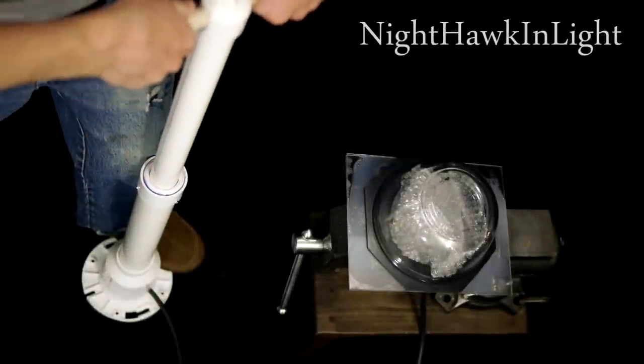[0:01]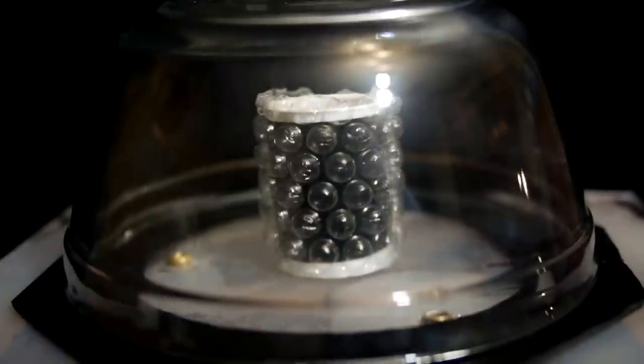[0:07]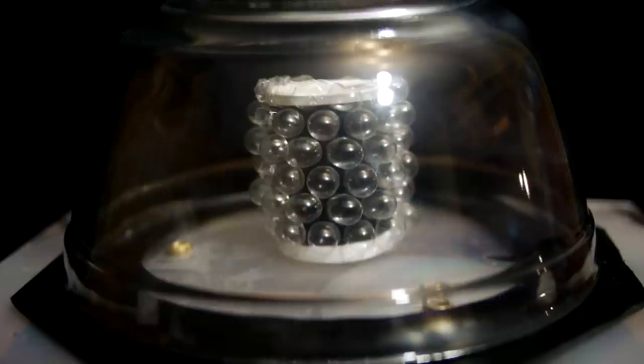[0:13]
This video will show how to build a high-volume manual vacuum pump. This sort of pump can be used to pull the air out of a sealed environment, which is useful for many scientific experiments and practical purposes.
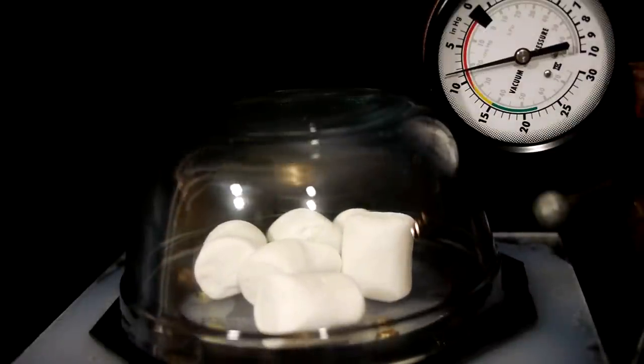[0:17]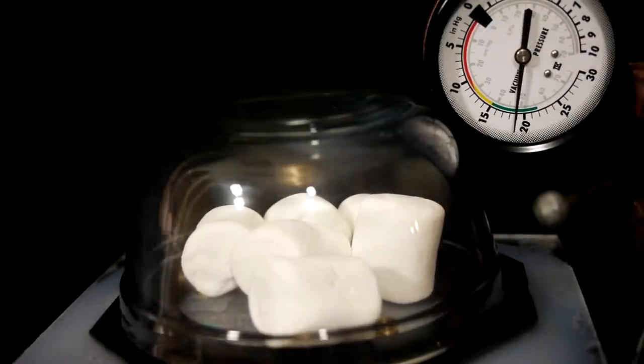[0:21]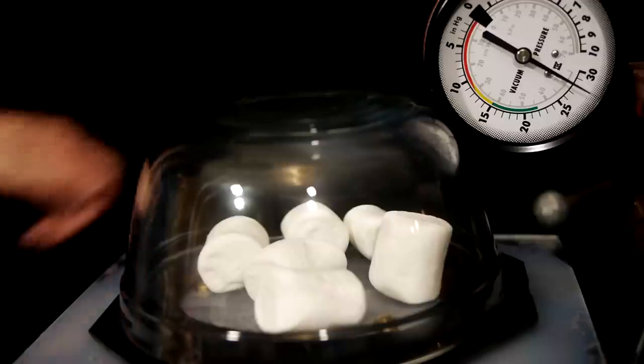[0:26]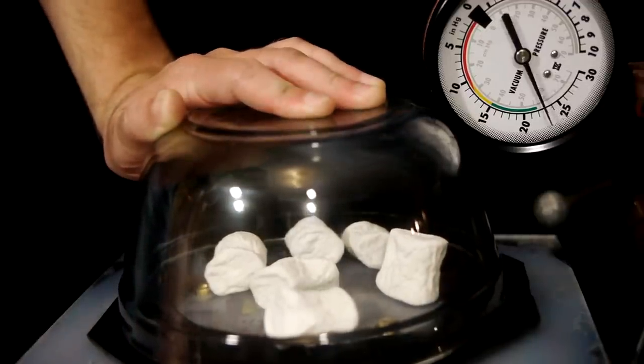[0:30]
Pulling the air out of marshmallows is a common demonstration of vacuum pressure. They first expand as air escapes from inside of them, then when once again exposed to normal pressure, the marshmallows will collapse in on themselves because the air bubbles within have been emptied.
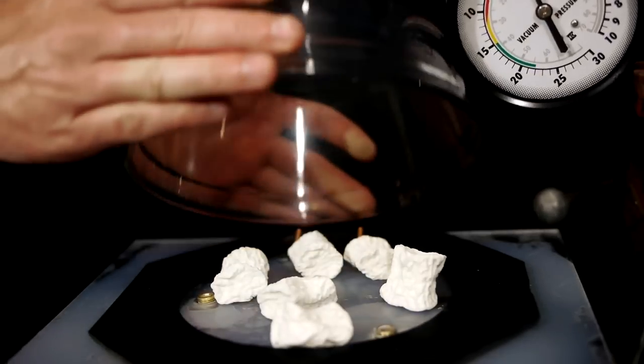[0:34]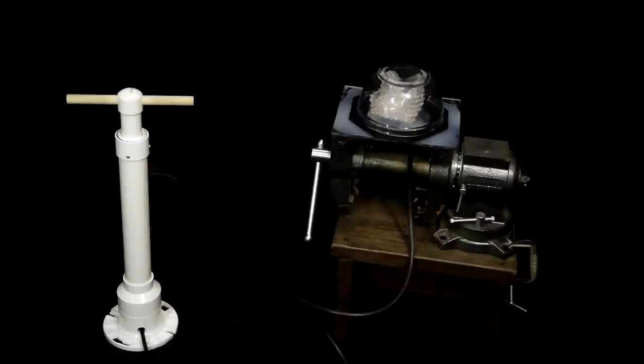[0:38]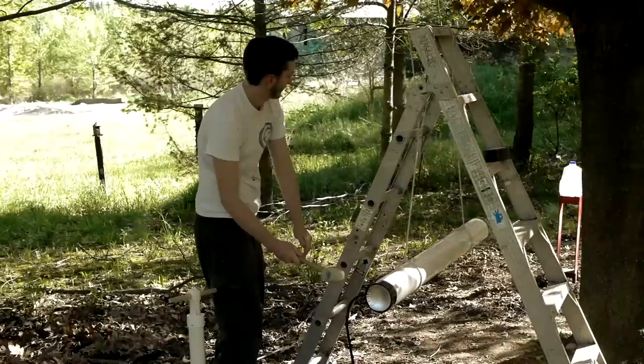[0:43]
This pump is the same design that I used in my previous video to draw the air out of a PVC pipe to create this vacuum cannon.
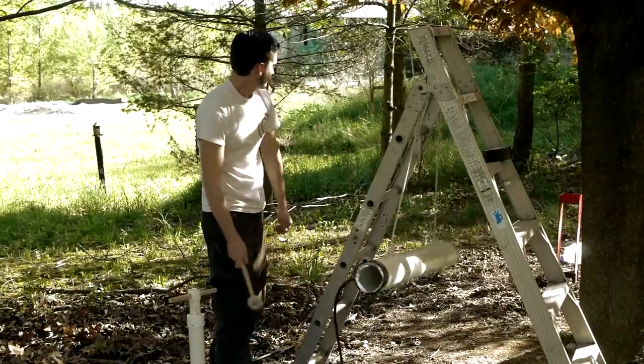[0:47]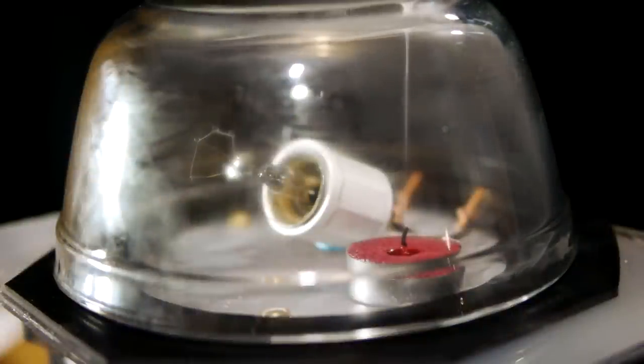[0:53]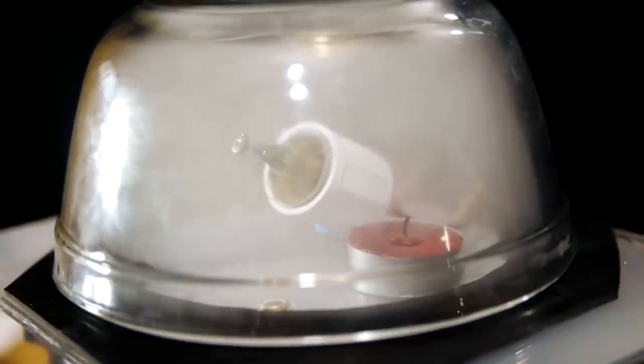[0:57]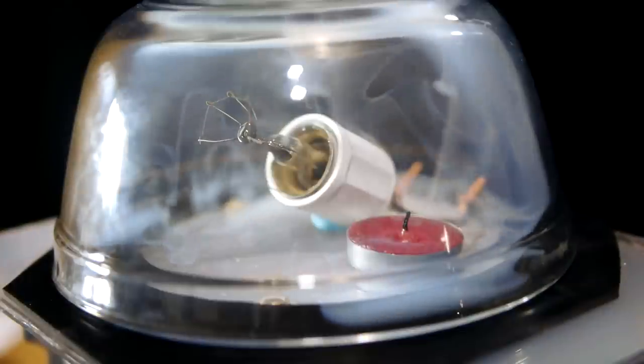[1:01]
The wax vapor from an extinguished candle will cause water in the air to condense into a thick fog as vacuum is pulled with the pump. A light bulb without the glass will even stay lit for several seconds in a vacuum before burning out.
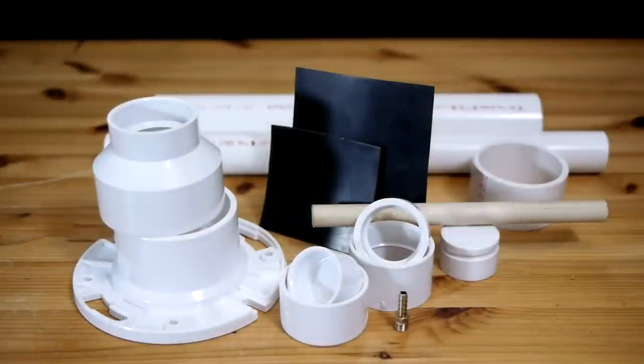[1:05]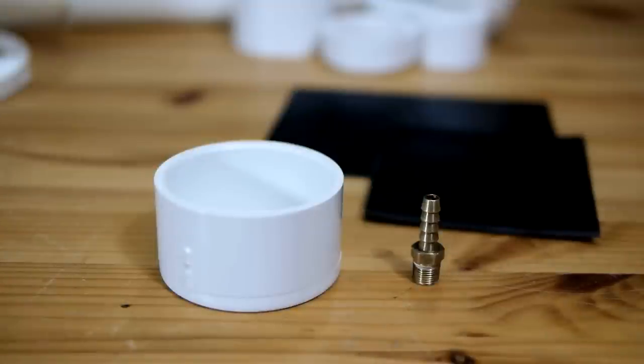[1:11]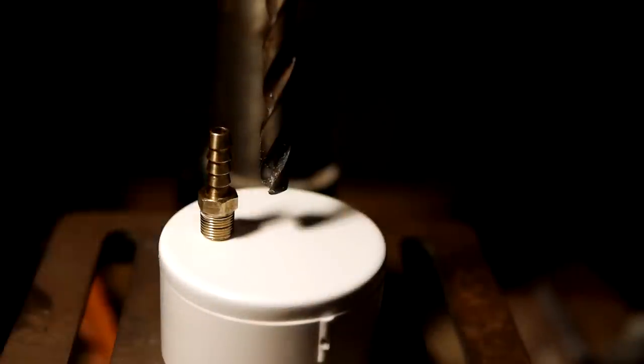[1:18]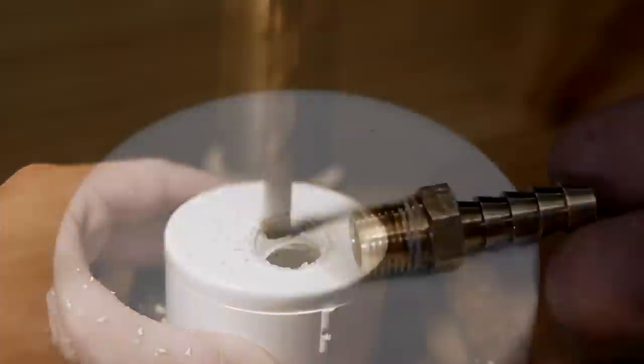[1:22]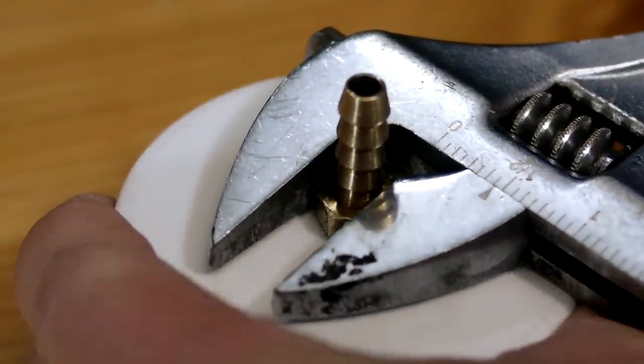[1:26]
This vacuum pump is composed of PVC pipe and fittings and two simple one-way valves that will be made using sheet rubber. Both valves will be mounted to a 2-inch PVC end cap, which will be modified first by drilling a hole to accept the threads on a 1/4-inch hose adapter. The hole drilled should be just small enough that the brass threads bite into the PVC for an airtight seal.
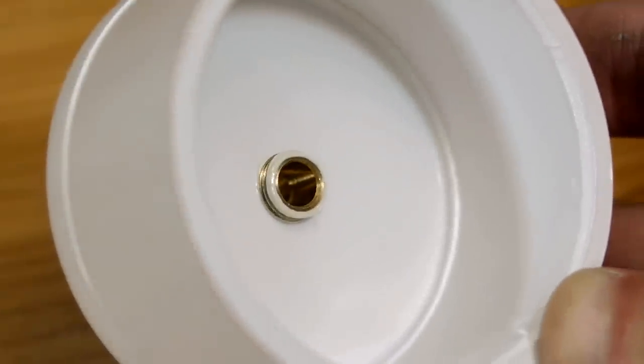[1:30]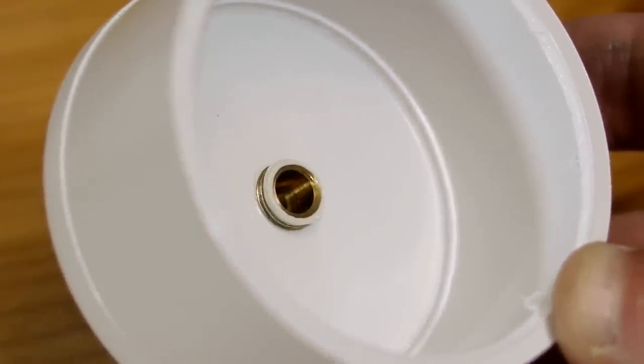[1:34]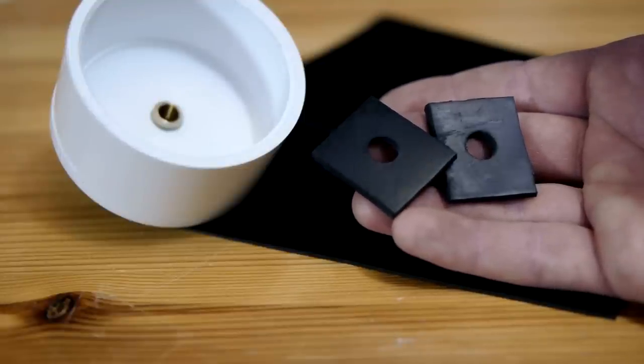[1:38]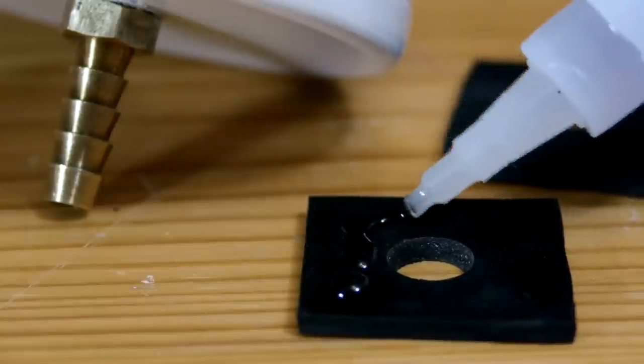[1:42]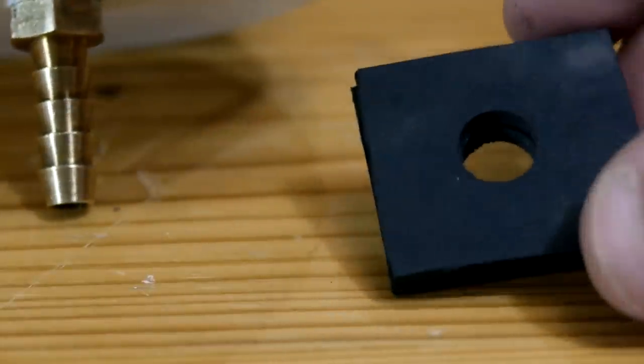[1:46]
The first of the two one-way valves will be mounted over this brass fitting on the inside of the end cap. Two pieces of 1/10 inch thick sheet rubber are given a hole in the center to fit over any of the threads on the fitting that might be coming through the cap. They are then superglued together to make up the base of the valve.
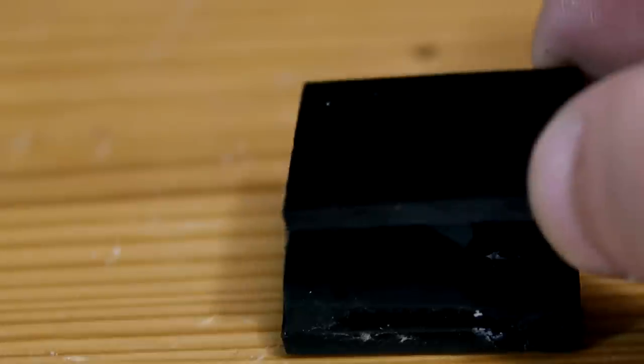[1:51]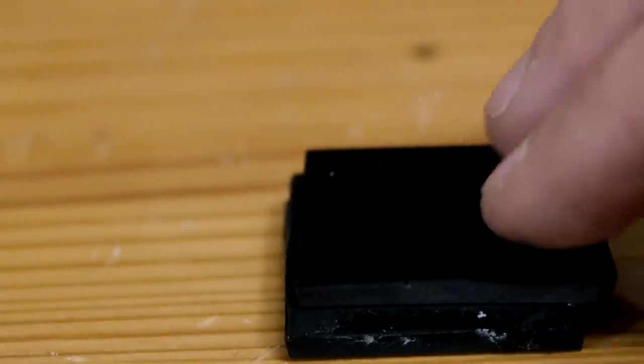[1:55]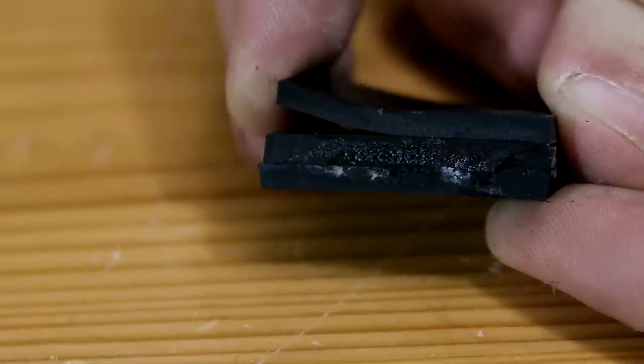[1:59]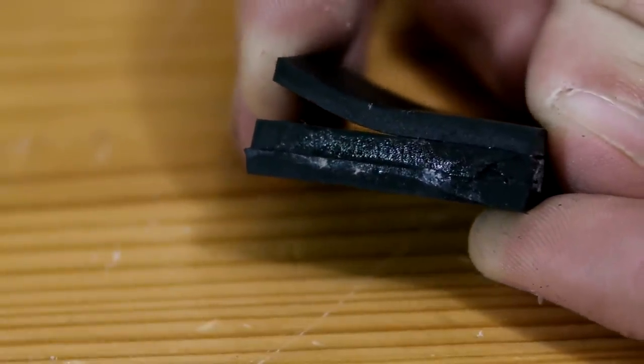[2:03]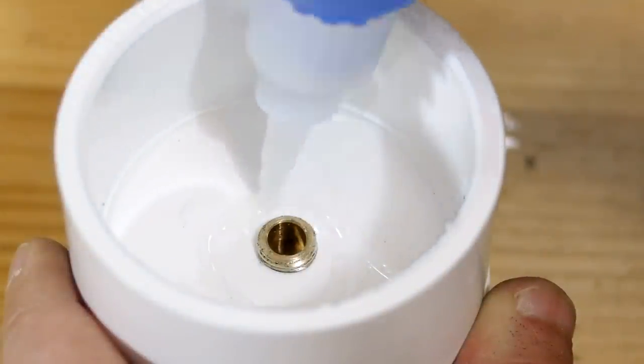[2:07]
A solid piece of sheet rubber of the same size is superglued over the top of the base, but only held on by glue on one side of the hole. This will allow the top sheet to flex open and let air pass by if it comes through the brass fitting, but prevent air from returning if the flow changes direction. With a ring of superglue around the hose fitting, the one-way valve can be glued permanently into place.
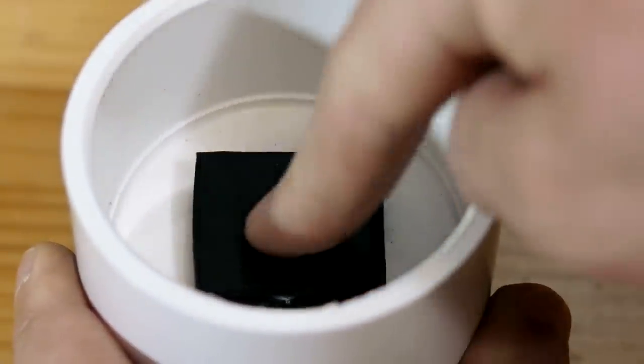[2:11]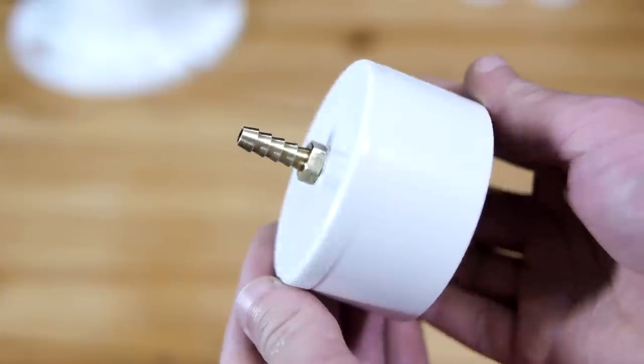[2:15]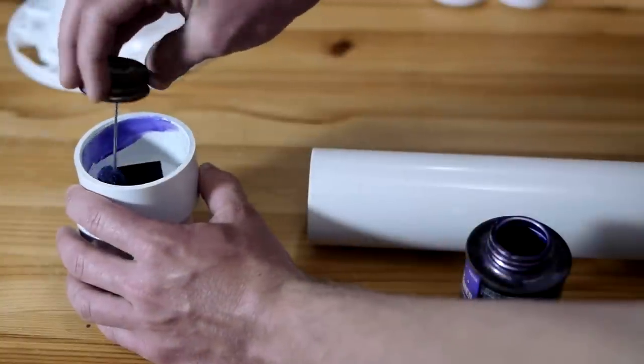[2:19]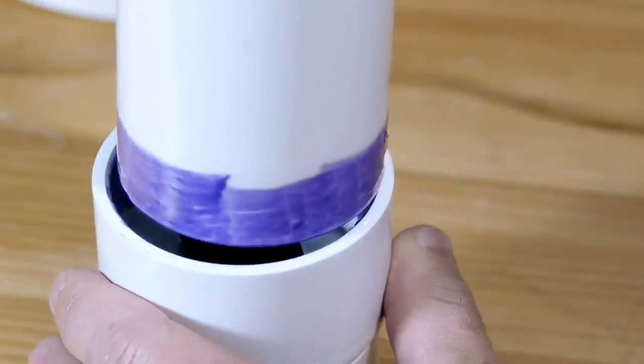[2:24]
Before making the second valve, the end cap will need to be affixed to the main body of the pump, which is a 16-inch length of 2-inch diameter PVC pipe. Some PVC primer and cement is used to join the cap to one end of the pipe.
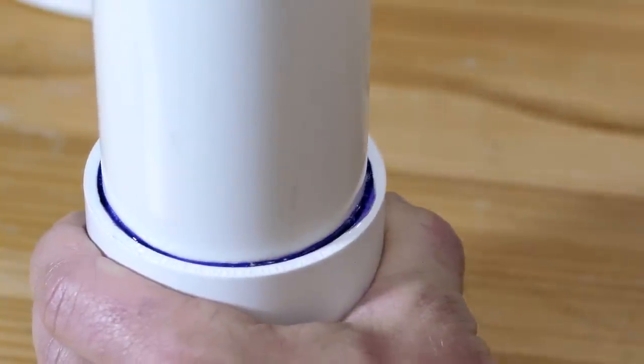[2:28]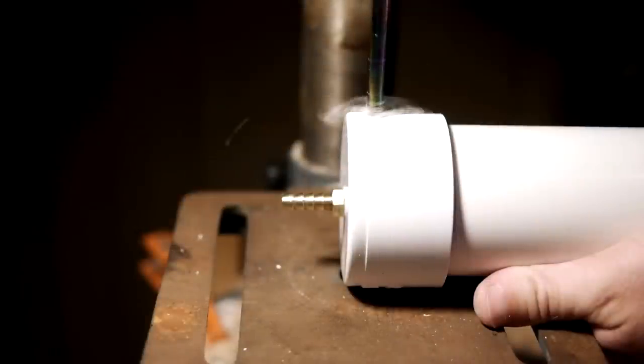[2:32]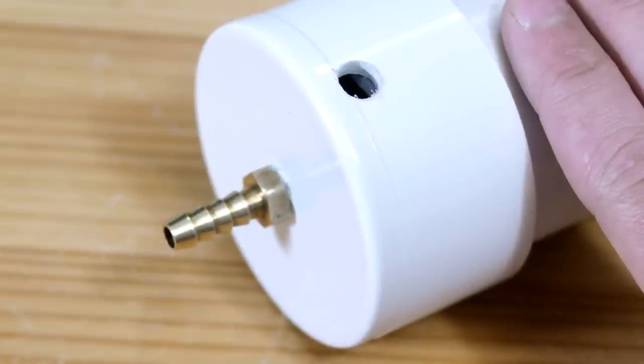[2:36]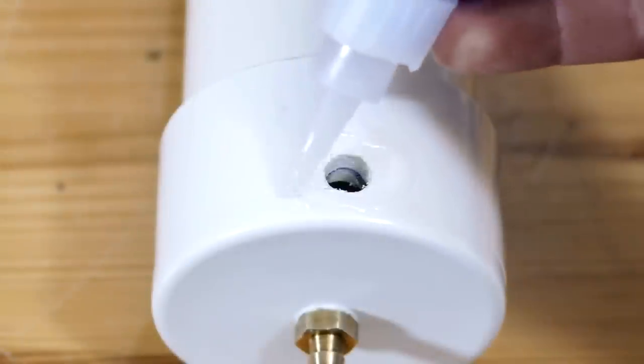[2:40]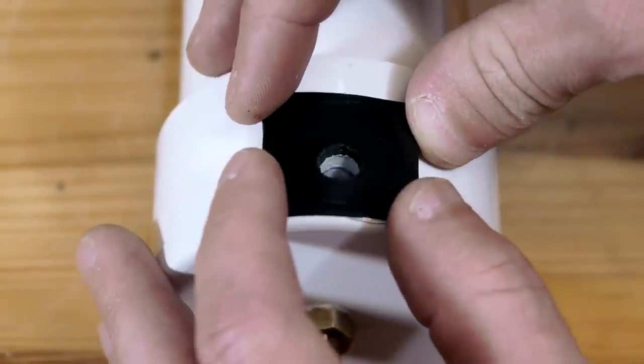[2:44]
Now about a 1/4 inch away from the bottom of the cap, a hole is drilled on the side as an air release for the second valve. 5/16 inch is an adequate diameter for this hole. Using more superglue, another piece of rubber with a matching hole is lined up and glued over the air release.
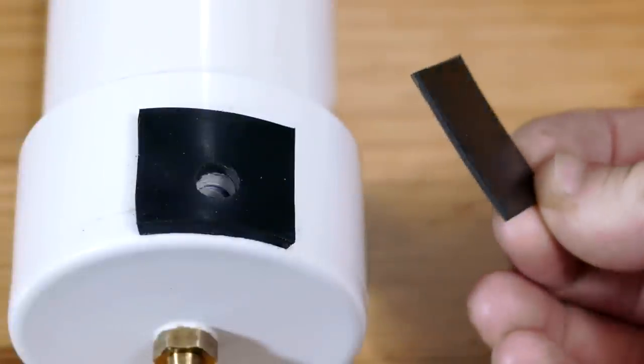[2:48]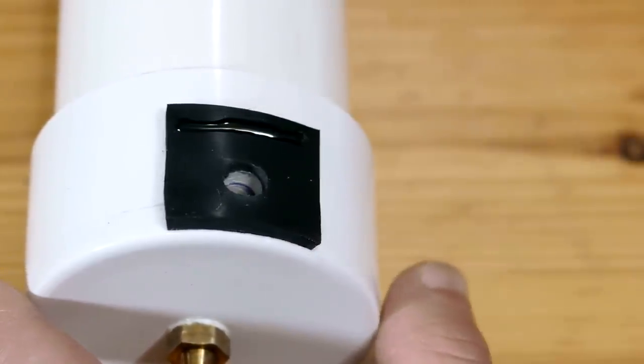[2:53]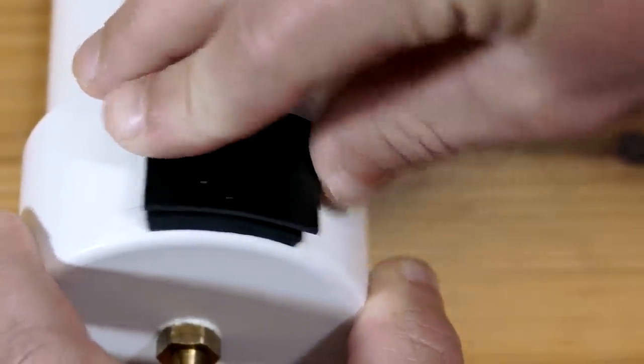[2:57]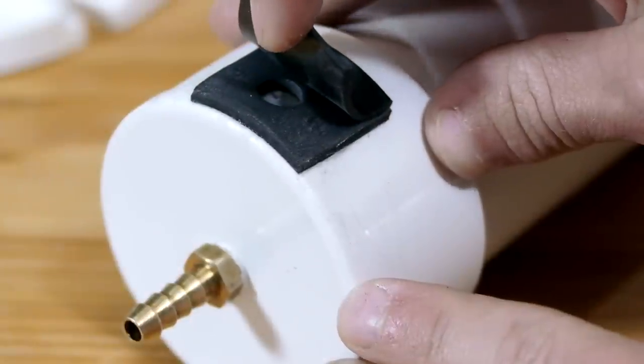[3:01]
To turn this into another one-way valve, another solid sheet of rubber is glued over top, held on by only one side of the hole to allow flex. I found that for the top sheet on this valve, thinner 1/16 inch sheet rubber works best, but the same rubber as before will do if thinner sheet is not available.
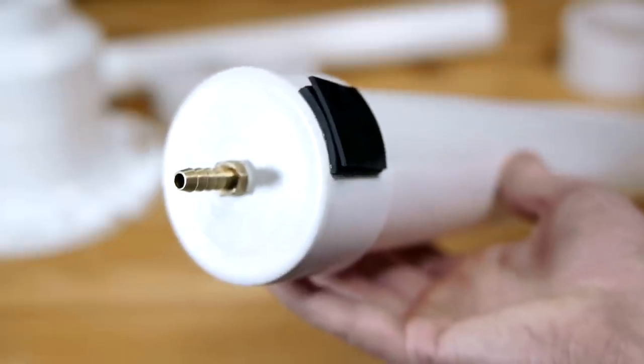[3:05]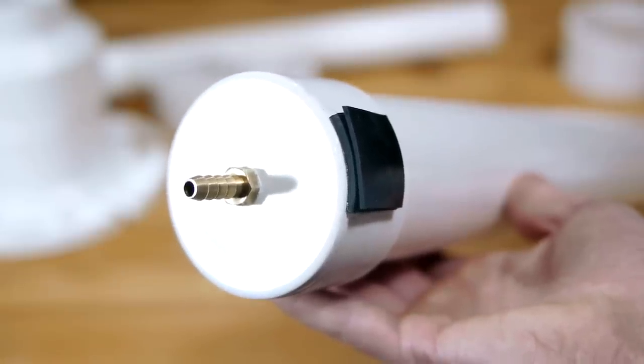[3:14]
With both valves now in place, if a piston seals this pipe and is pushed forward, air will escape through the side, and when pulled back, the side valve will seal and the inside valve will allow air to be pulled through the fitting. Repeating this process will draw a vacuum in whatever chamber the fitting is attached to.
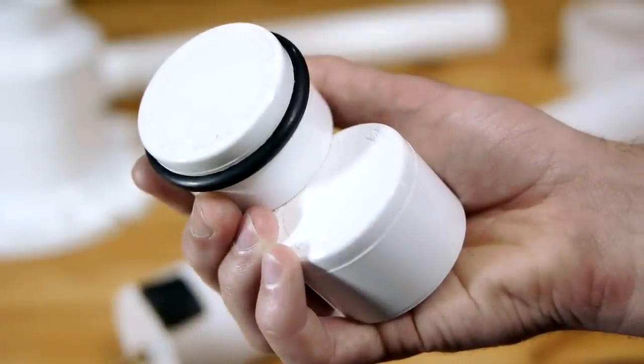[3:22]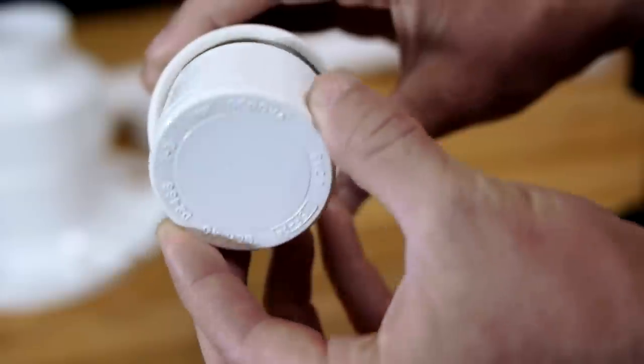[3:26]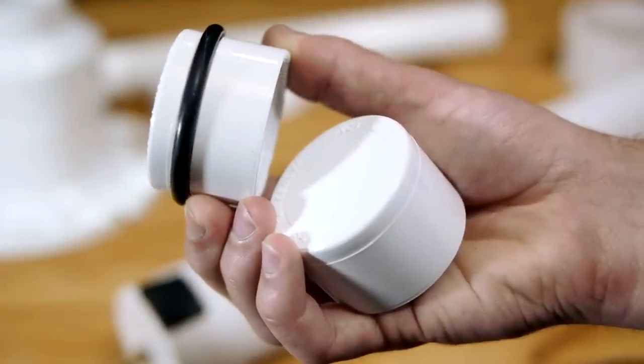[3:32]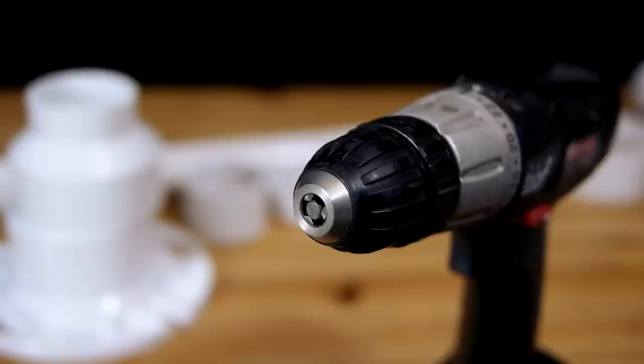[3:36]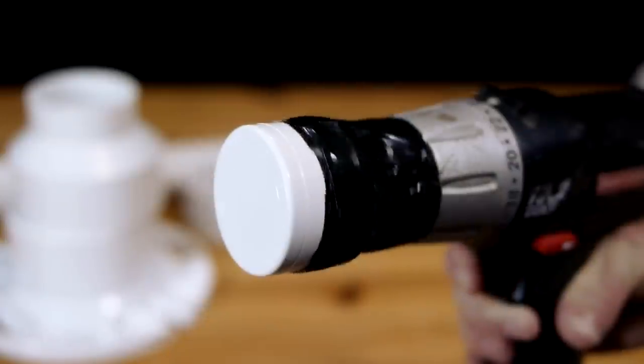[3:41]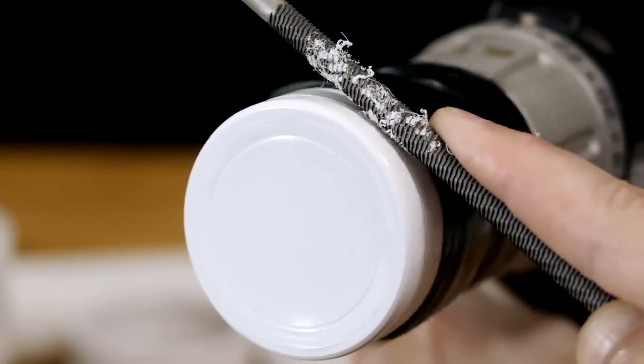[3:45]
To make the piston, I start with a 1¼-inch PVC end cap, which is already a close fit inside of the 2-inch PVC pipe, but to make it an airtight seal, the cap will need an O-ring installed. There are a number of ways to cut a groove for an O-ring, but the method I've found that requires the fewest tools is to mount the cap to a drill and use a rat tail file to grind a ring as the drill spins.
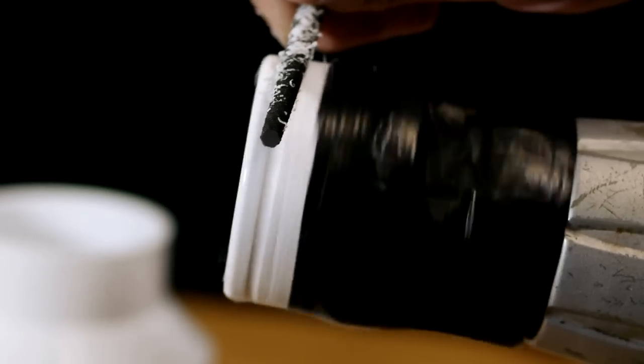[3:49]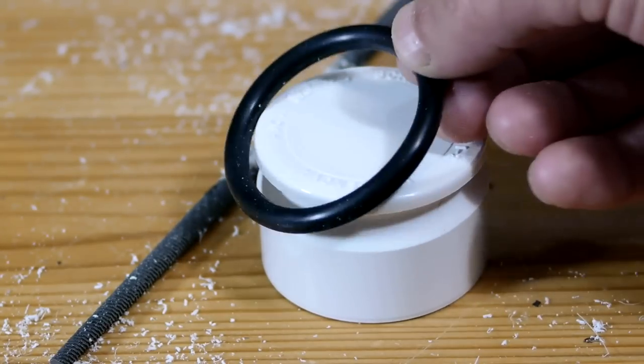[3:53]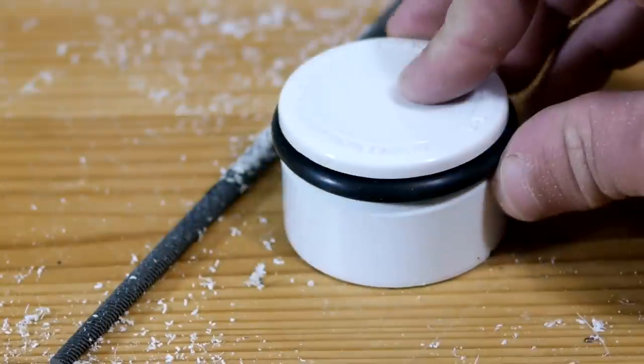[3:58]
The O-ring I am using is quite thick, so it takes a good deal of time to grind a groove deep enough for it to sit in. A narrower ring could possibly be used and would require less time, but thin rings are less durable and may need to be replaced more frequently.
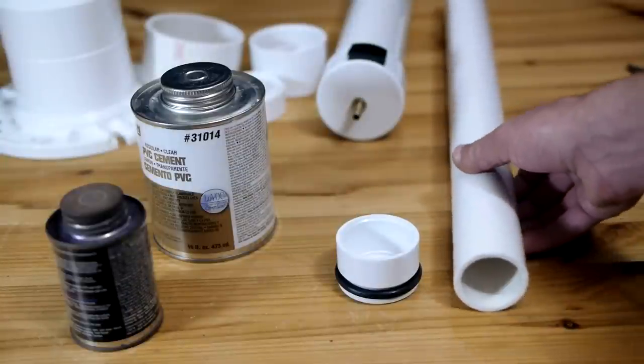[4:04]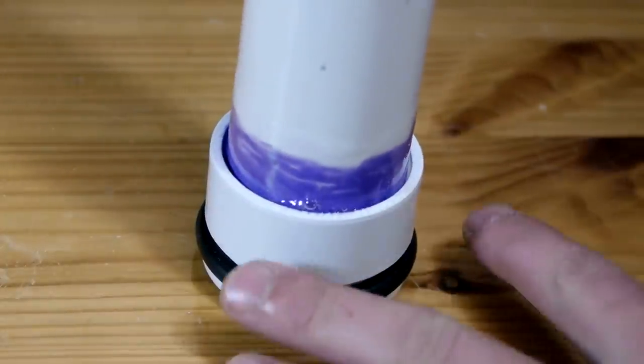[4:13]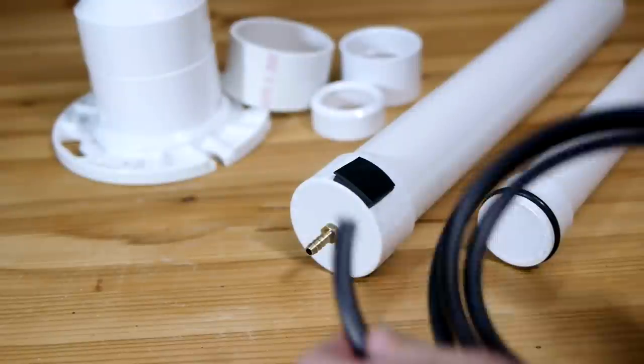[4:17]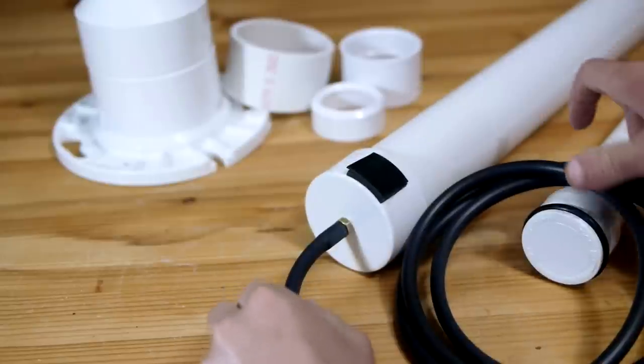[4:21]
Once the O-ring has been snapped into the groove, the piston is complete, and it can be mounted to the pump shaft, which is a 20-inch length of 1¼-inch PVC pipe. More primer and cement will get the job done nicely. Before moving on to the next step, a length of 1/4-inch vacuum hose should be pressed onto the brass fitting at the base of the pump.
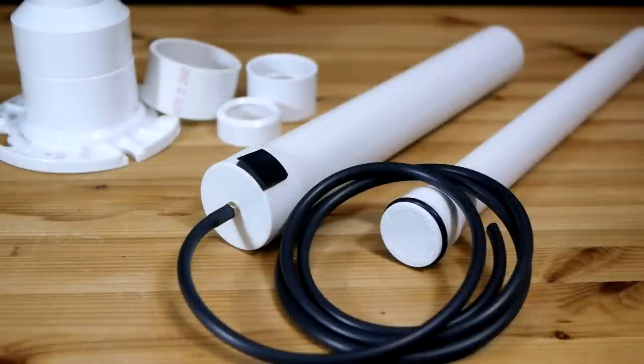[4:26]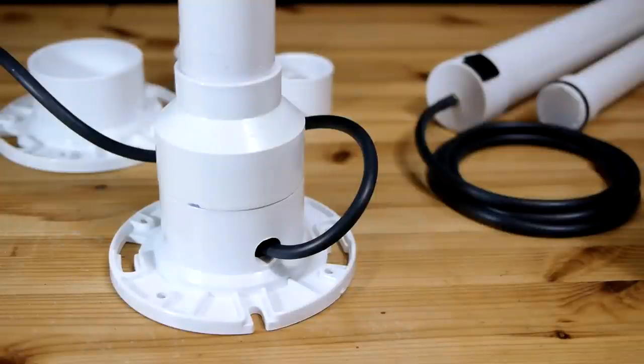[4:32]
All the moving parts that allow this pump to function have now been completed. The rest of the design is simply there to make it convenient to operate, starting with the base. The first piece used is a 2-inch to 3-inch adapter which will need to be slid all the way down over the 2-inch body of the pump.
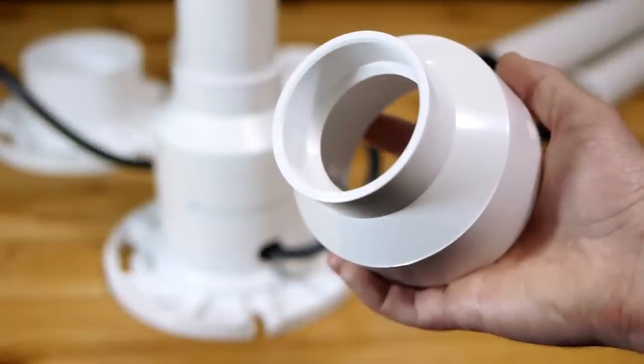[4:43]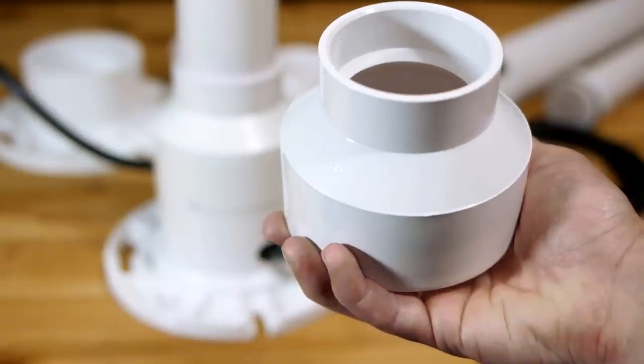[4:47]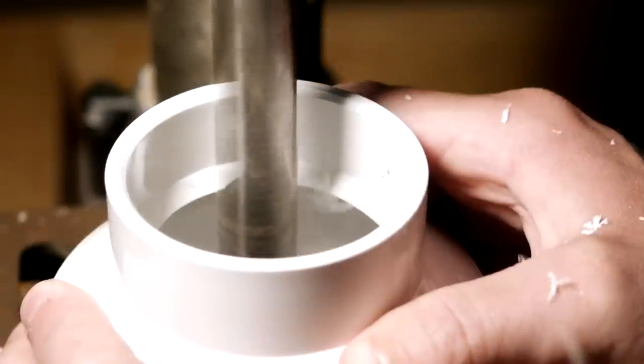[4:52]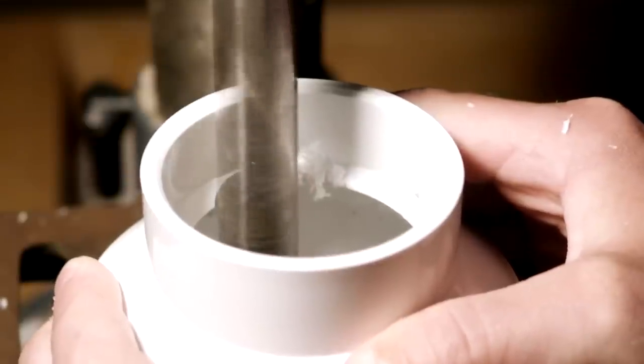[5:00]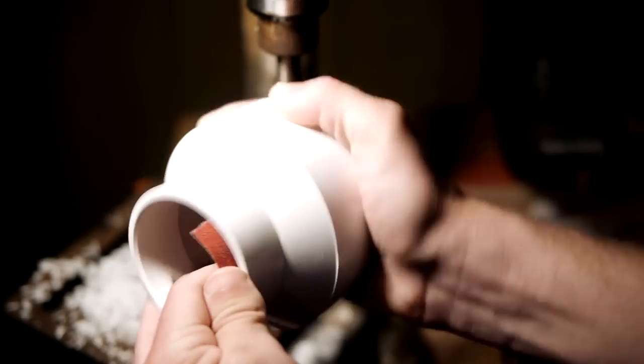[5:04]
The adapter has a ridge built into the inside wall to prevent it from being slid freely all the way over a pipe, so that ridge will need to be ground out. A large drill bit works nicely to quickly remove the problem, as can be seen here, but a razor blade or a Dremel will work as well. Some sandpaper smooths out any rough edges, and this part is complete.
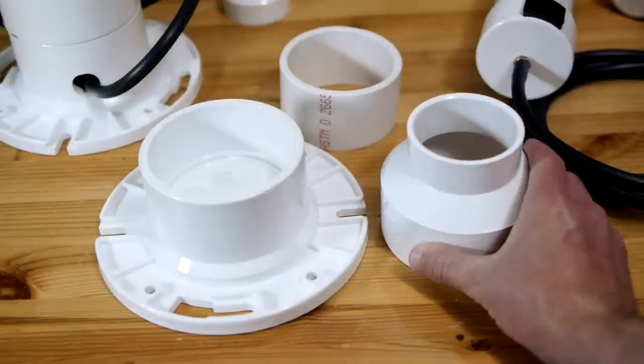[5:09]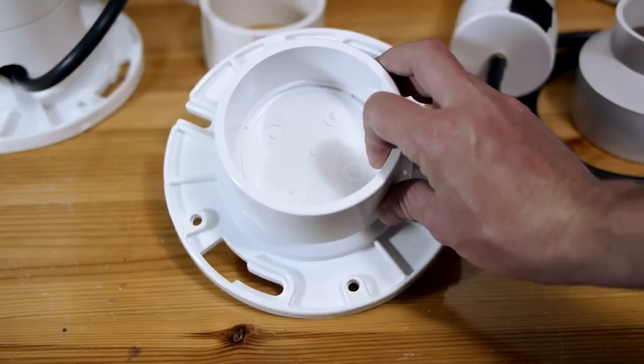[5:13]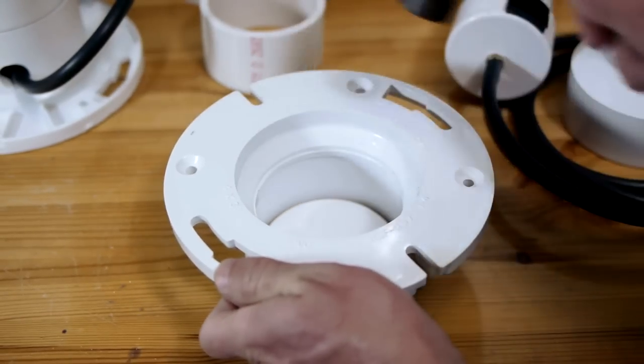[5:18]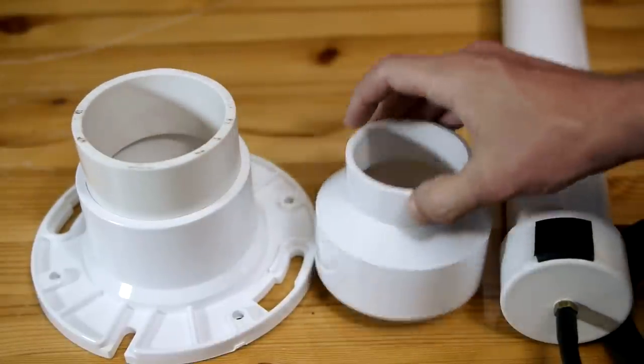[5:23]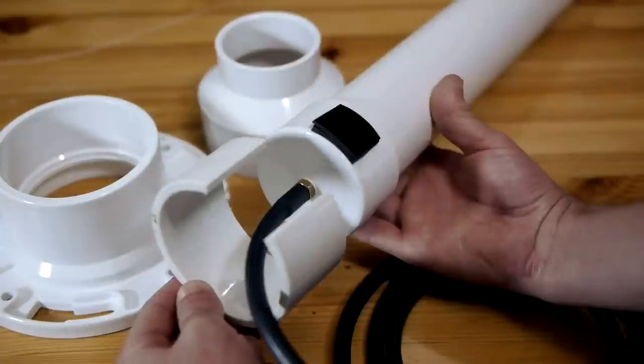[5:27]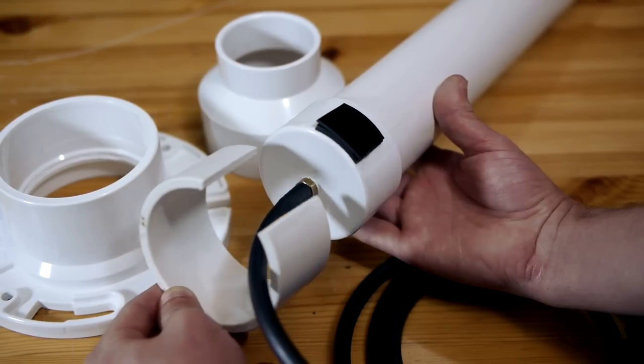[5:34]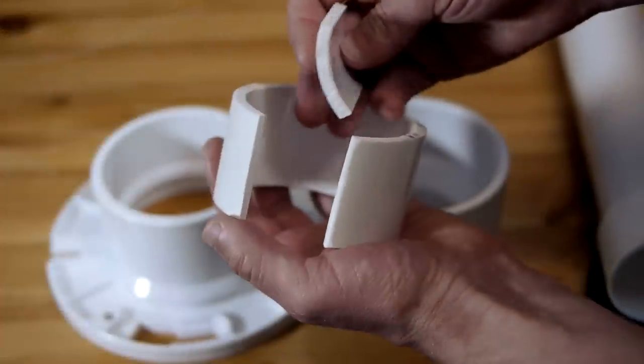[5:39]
The second part to the base of this pump is a 3x4-inch PVC closet flange, which comes with a stop in the center that is made to be knocked out from the larger end. This flange will be connected to the 2x3-inch adapter that I just modified using a short length of 3-inch PVC pipe. Because the base of this pump will be over the top of the exterior one-way valve, the joining section of 3-inch pipe will need to have a gap cut out of the side to allow space for the valve to open and close.
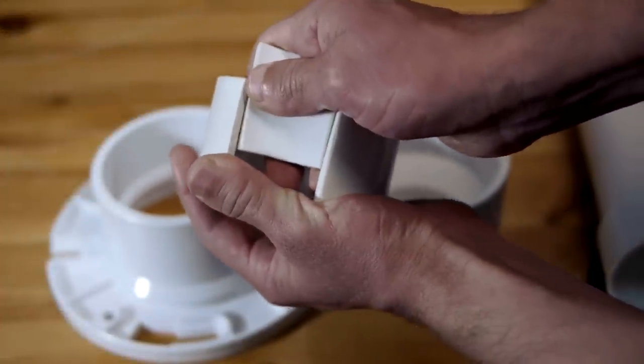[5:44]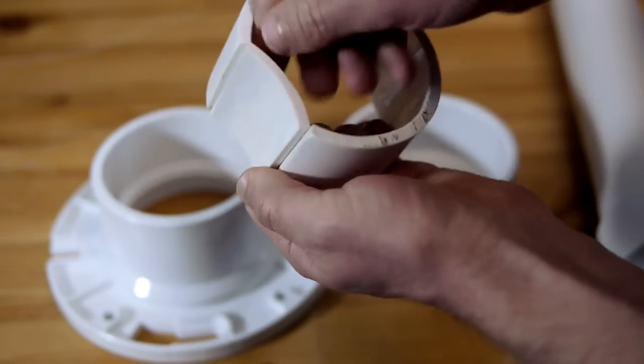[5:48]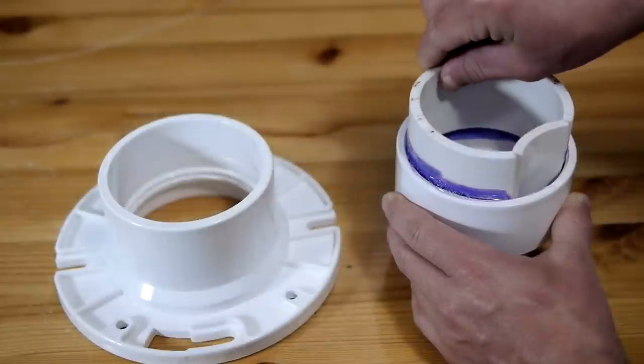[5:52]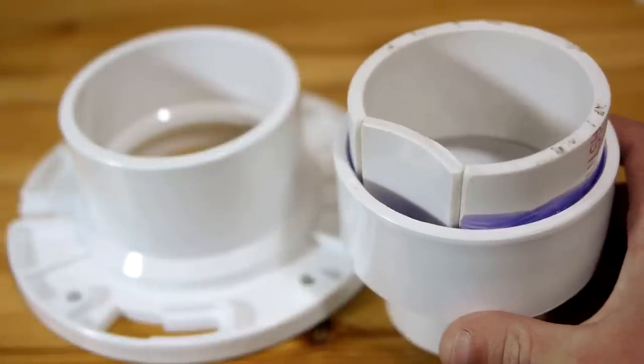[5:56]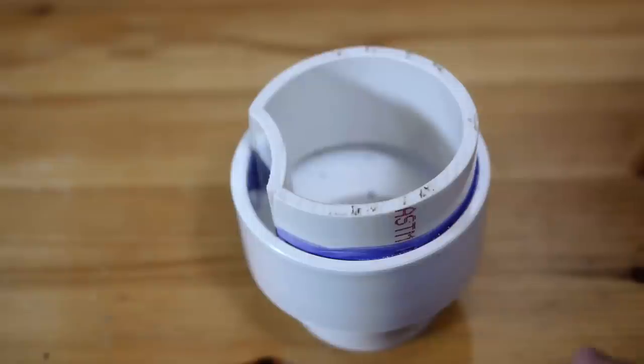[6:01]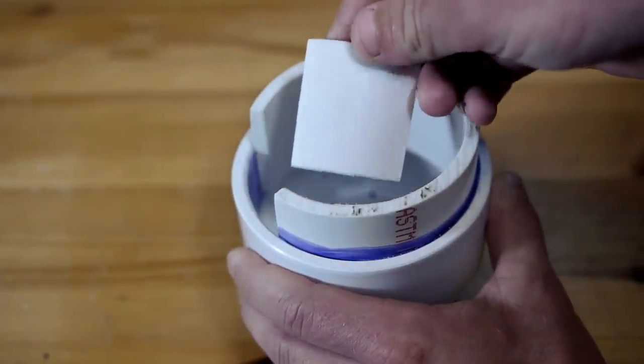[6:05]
Once the gap has been cut out with a handsaw, the section of pipe will want to spring closed slightly, making it too loose a fit to glue into the fittings. Placing the piece that was cut out of the pipe back into the gap, but backwards, will hold the pipe open as it's glued into the adapter. After an hour or so, the glue should cure enough to hold the pipe open on its own, so the backwards section can be removed.
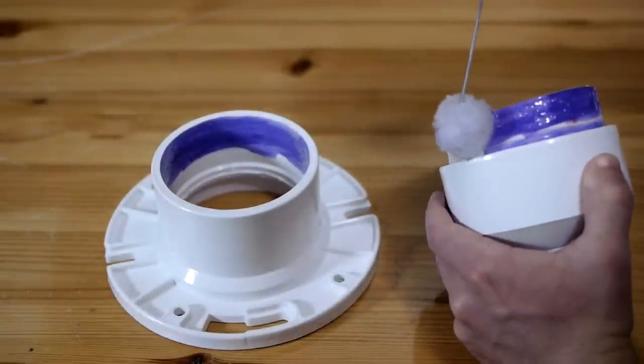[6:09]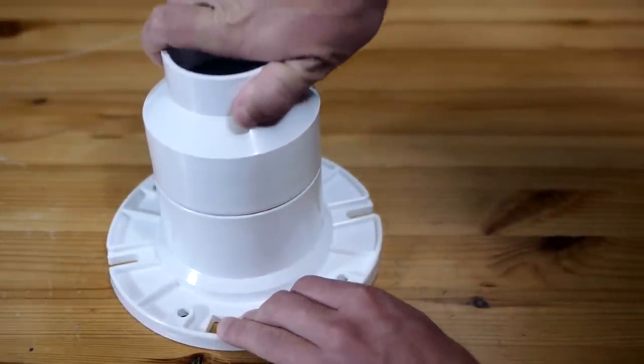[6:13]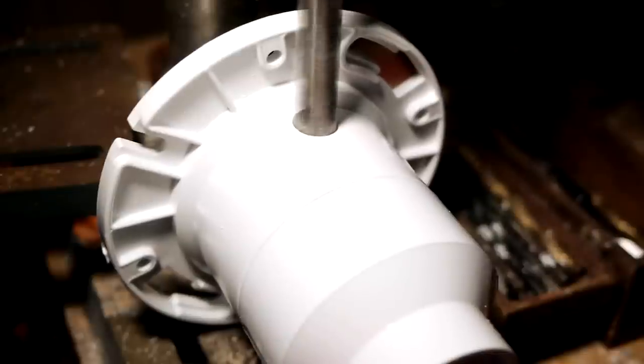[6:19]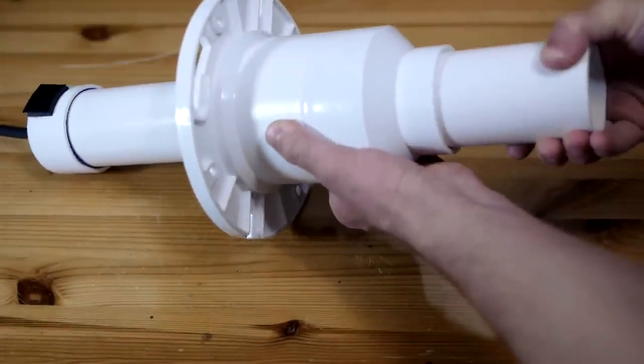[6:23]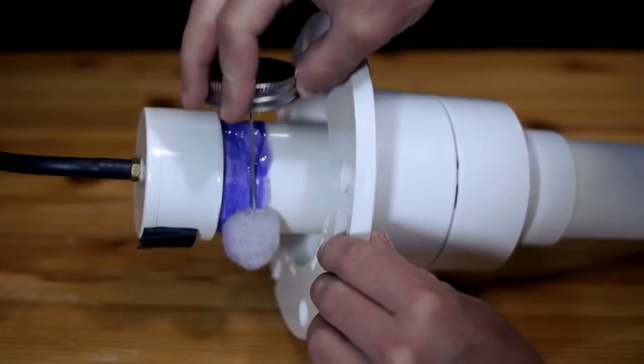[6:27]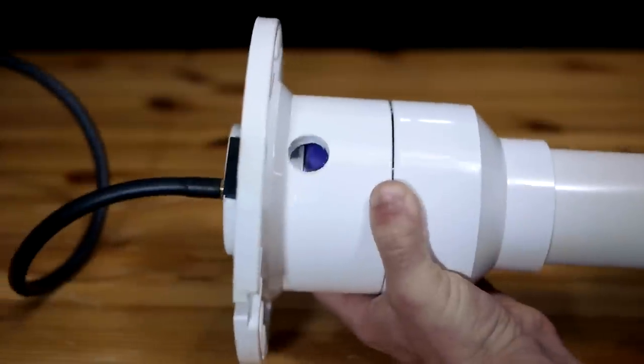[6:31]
It should come out easily, since placing it in backwards caused it to only touch the adapter at the edges. With another swab of primer and cement, the adapter can be glued into the closet flange. The base now only needs to have a hole drilled just above the flat portion to allow the vacuum line to pass through. With this done, the base is slid over the top of the pump body. Before it reaches the bottom, a layer of primer and cement should be placed as shown on the pump to be sure the base is held on firmly.
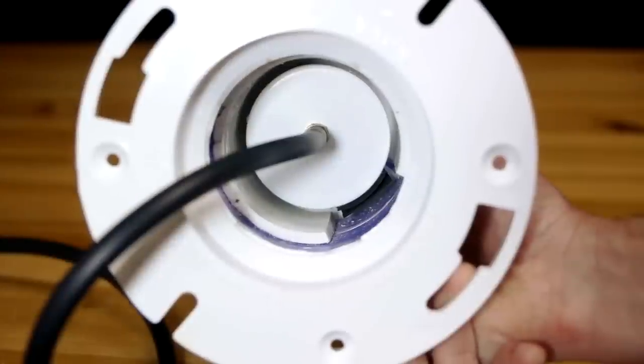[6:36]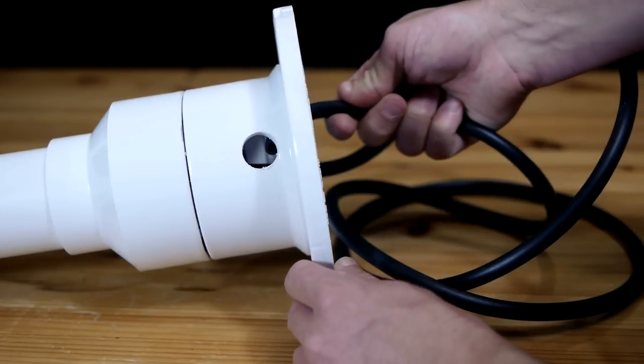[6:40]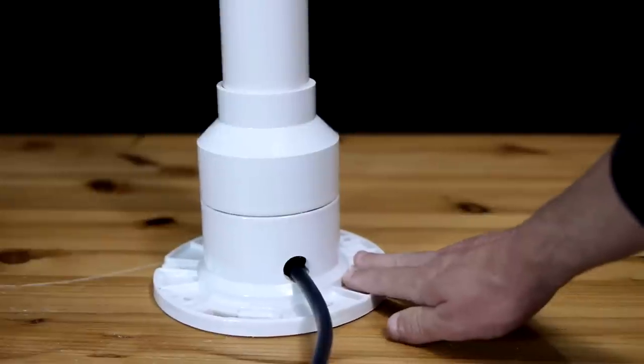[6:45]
It is then slid in place against the end cap, being sure that the gap on the inside lines up with the one-way valve. The base is completed by feeding the vacuum line from the brass fitting through the hole that was made for it.
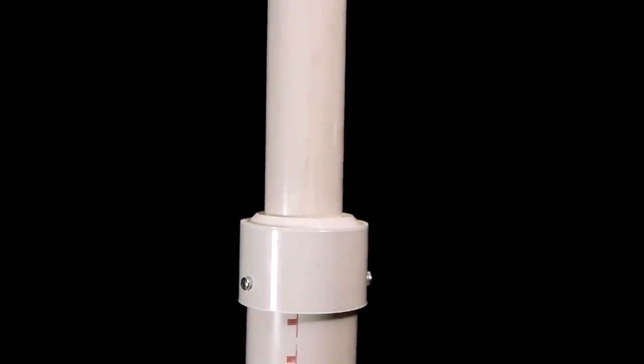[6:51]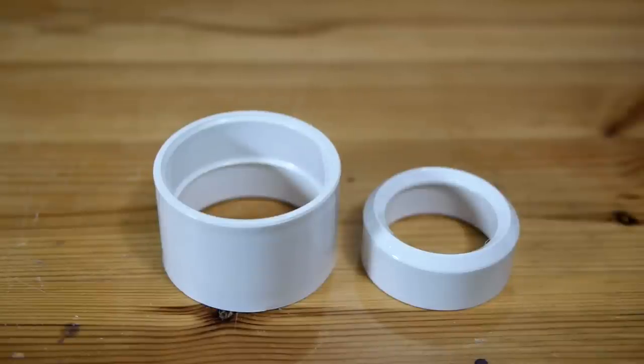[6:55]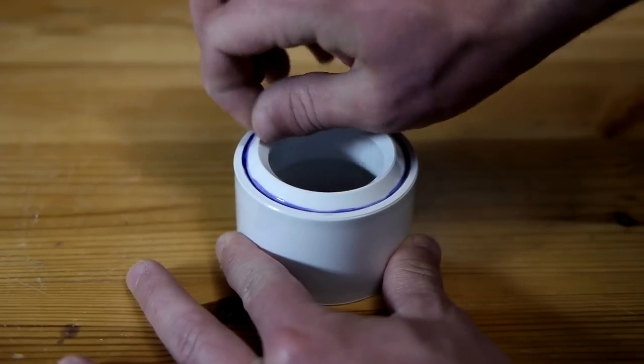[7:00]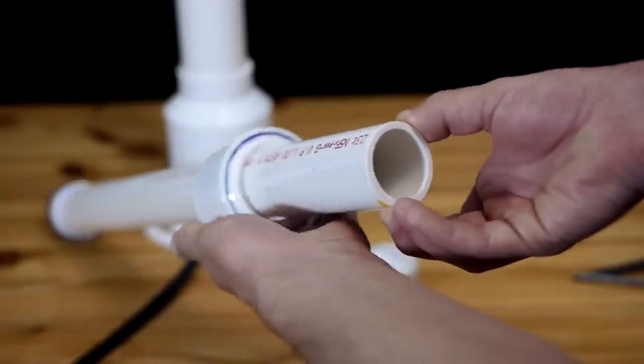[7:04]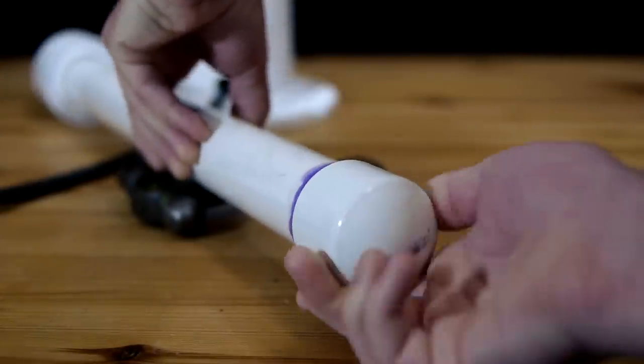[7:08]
Looking at the finished pump, there is a section at the top that is there to prevent the piston from being pulled all the way out by accident. This part is made by gluing a 1.5 by 2 inch reducer into a 2 inch coupling. Once done, the assembly can be dropped onto the end of the pump shaft with the open end of the coupling facing the piston. The open end of the shaft can now be sealed with an 1¼-inch end cap.
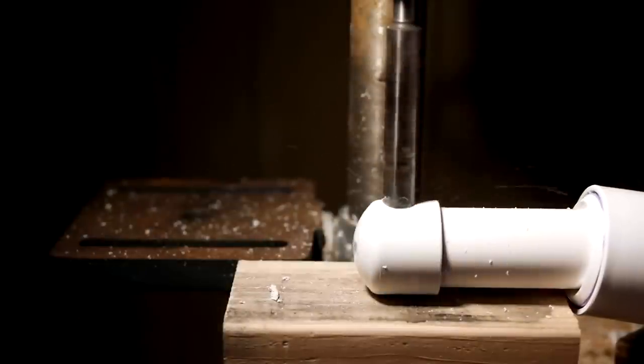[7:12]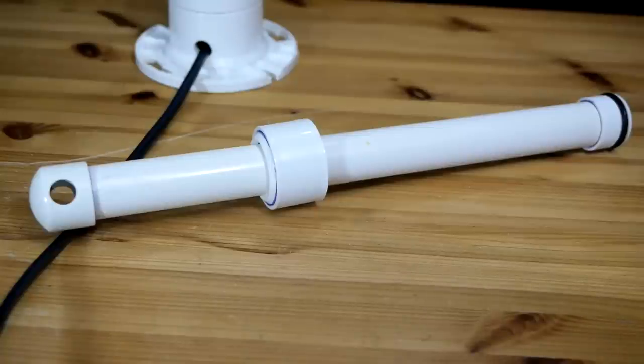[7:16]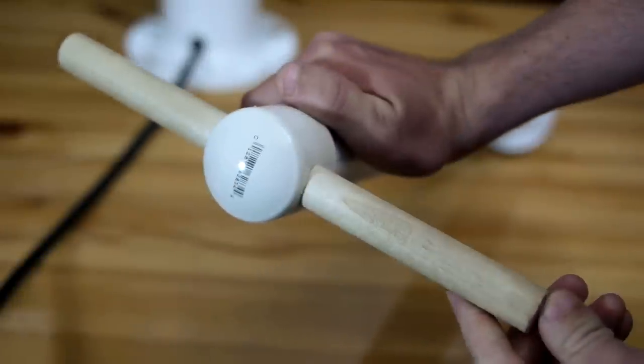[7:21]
Through this cap, a 3/4-inch diameter hole is drilled to fit a handle. For the handle, I use a 3/4 by 10-inch long dowel that is simply pushed into place. The shaft is now complete and ready to be inserted into the rest of the pump assembly.
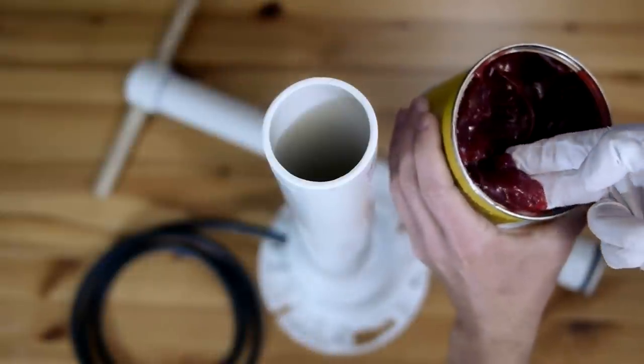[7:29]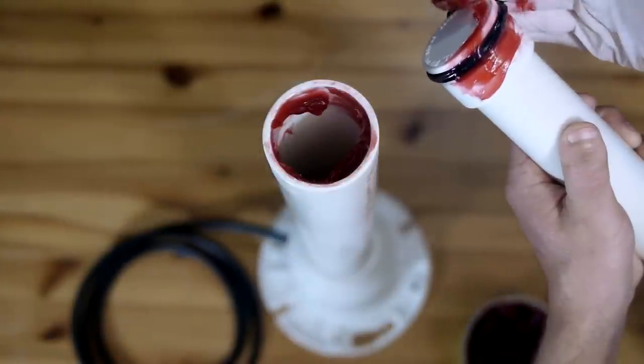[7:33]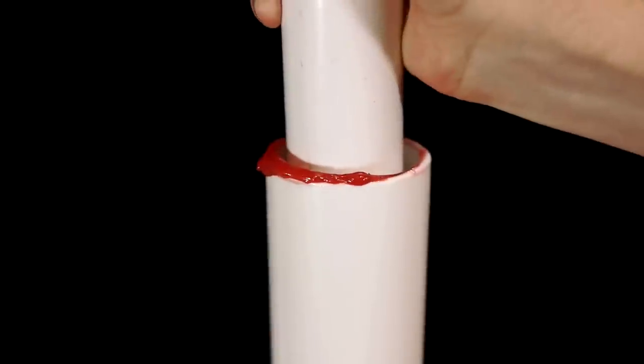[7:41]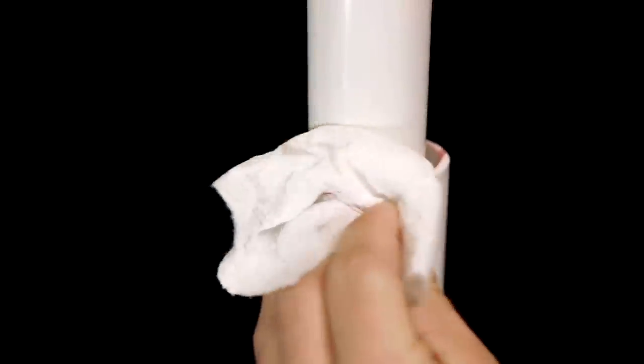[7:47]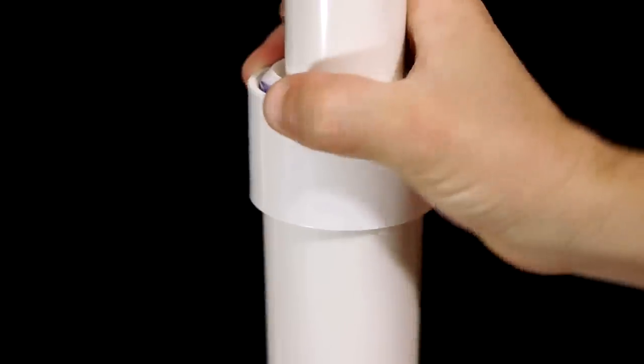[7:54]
A large amount of heavy grease should first be spread into the pump opening and a thick coat given to the piston as well. If the O-ring on the piston is a tight fit in the 2-inch pipe as it should be, it may require being fed in at a slight angle at first and should then slip into place with a twist. Any excess grease at the top of the pipe can now be cleaned away, and the coupling and reducer assembly that was slid onto the shaft earlier can be pressed on.
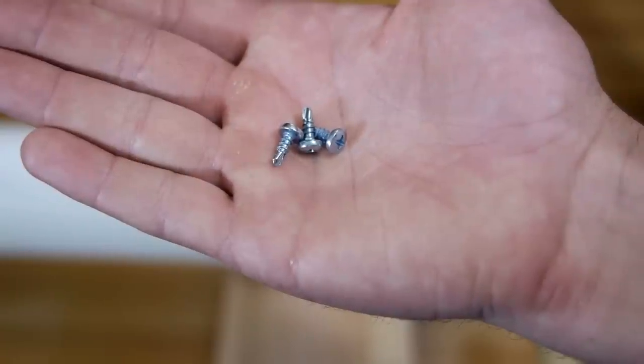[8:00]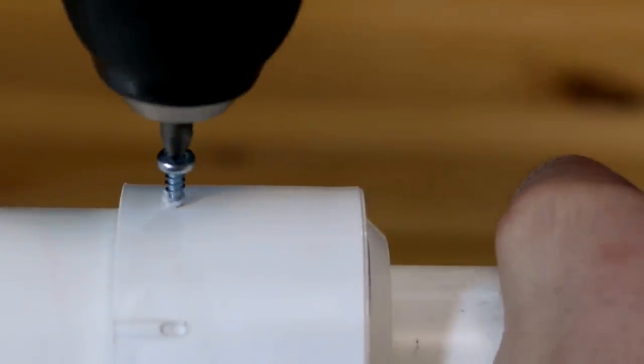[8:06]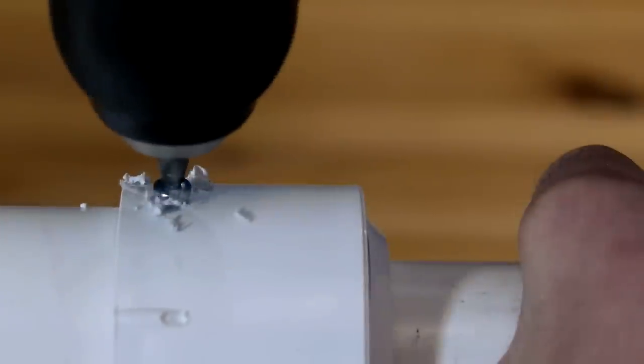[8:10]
Since it's possible that the piston may need to be removed for maintenance in the future, rather than permanently gluing the stopper on, several short, self-tapping screws are drilled through the coupling to hold it in place. If there are ever any problems, the screws can be removed so the shaft is able to be extracted. The pump is now fully operational.
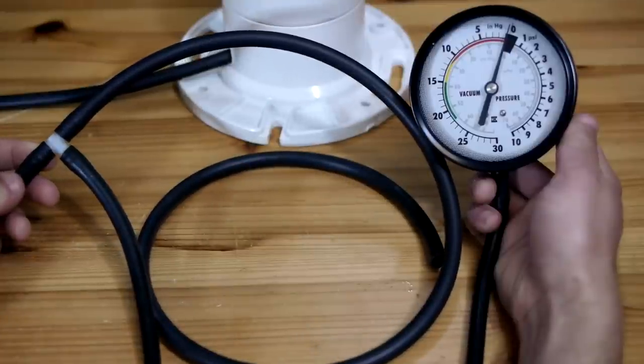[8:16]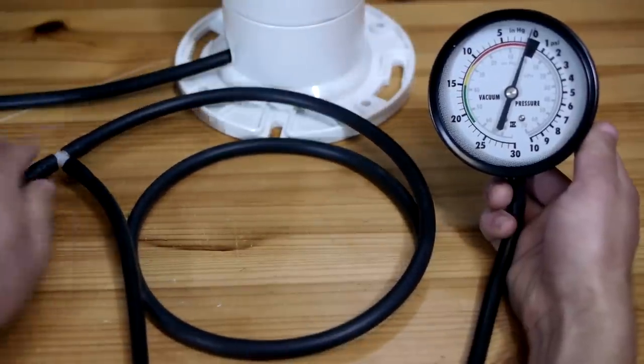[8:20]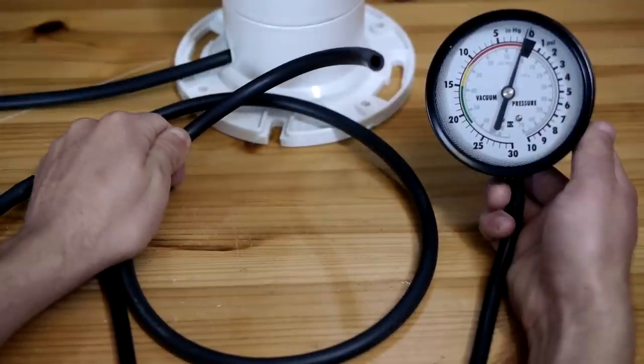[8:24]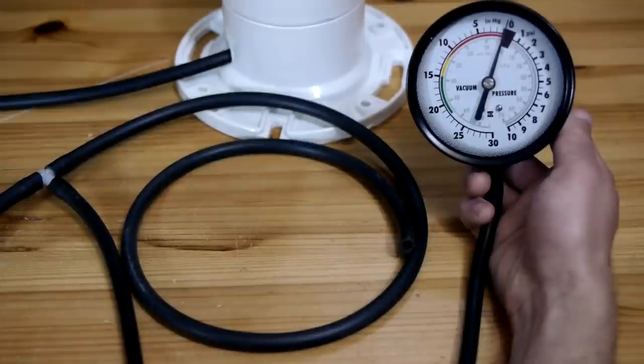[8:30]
One additional modification that can be made is to splice a vacuum gauge onto the line from the pump using a three-way hose connector. A vacuum gauge will allow the user to tell just how much vacuum is being pulled, with 30 inHg being the maximum possible. These gauges are readily available at auto parts stores.
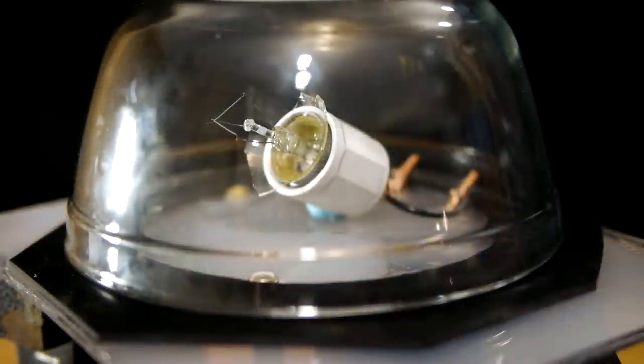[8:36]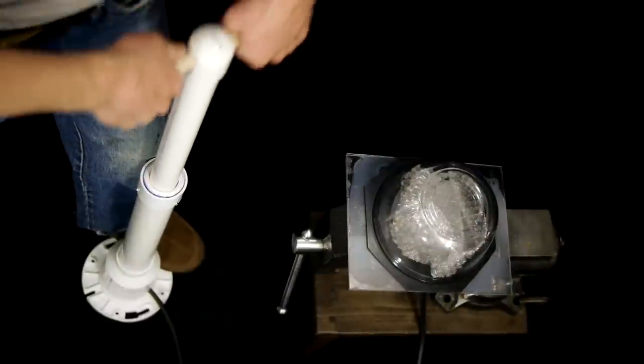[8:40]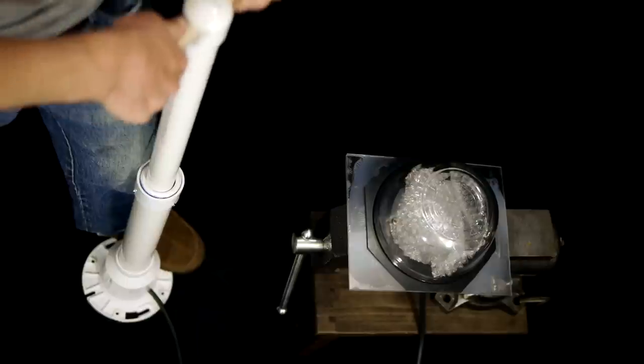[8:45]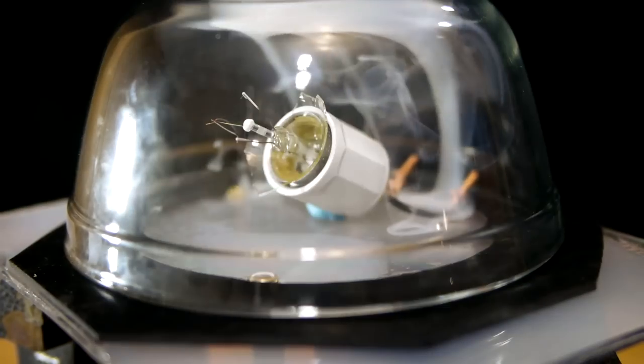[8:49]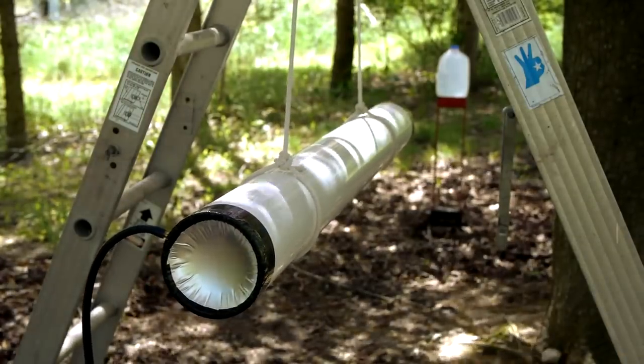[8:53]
The open line from the pump can now be connected to anything that requires vacuum pressure by using another 1/4-inch hose fitting. With every upstroke of the handle, air will be pulled from the hose and then ejected through the exterior one-way valve on the downstroke. This pump is now ready for years of use with many different projects, such as my vacuum cannon.